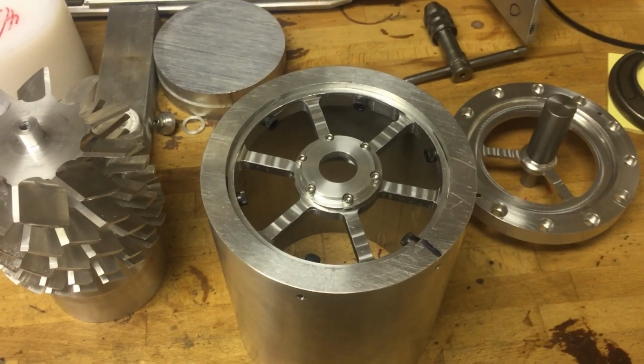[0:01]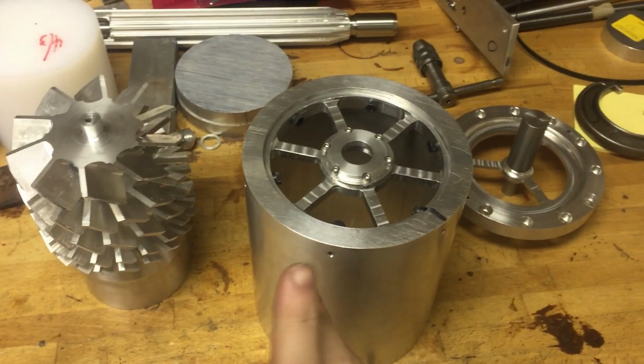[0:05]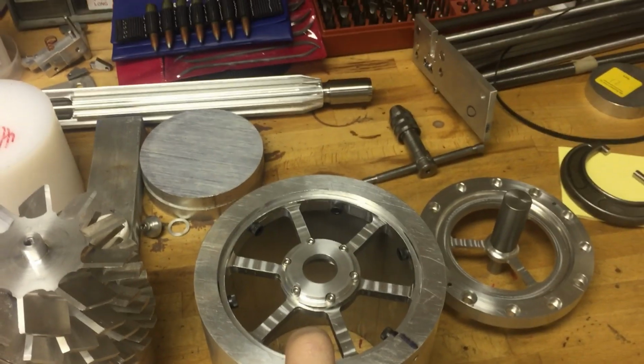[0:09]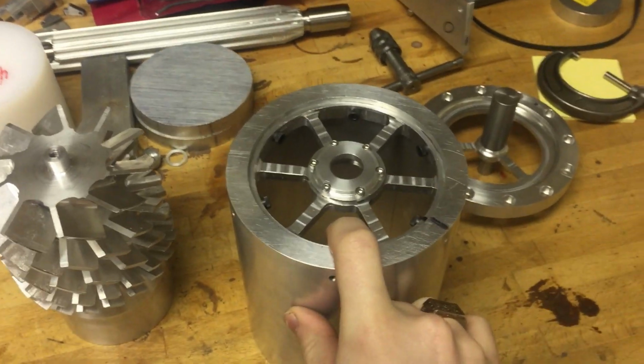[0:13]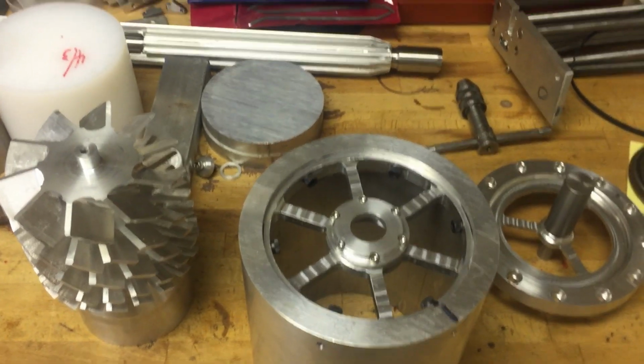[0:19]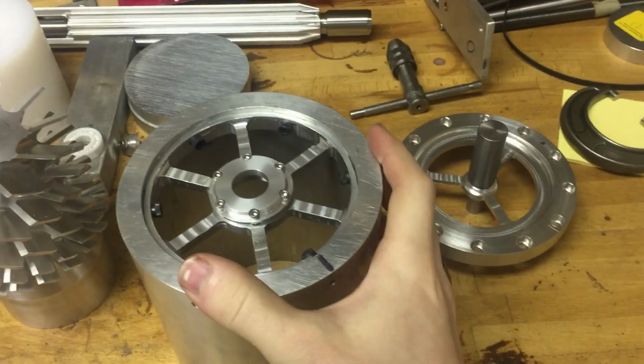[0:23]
All right, I figured I'd say a few words about my latest project. Well, first of all, I am back in my own shop because, like every other school in the country, we evacuated due to coronavirus. So I'm back home now for the rest of the semester and for the summer, which hopefully means I'll be able to get done a lot more projects than I had previously planned for the summer, which is great. And this is what I'm working on right now.
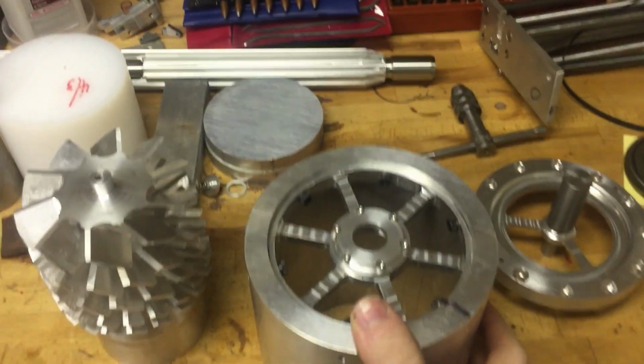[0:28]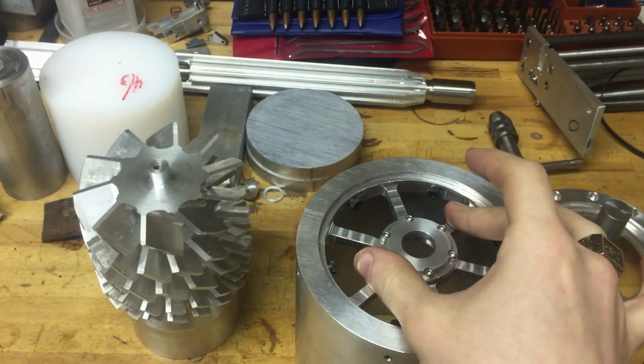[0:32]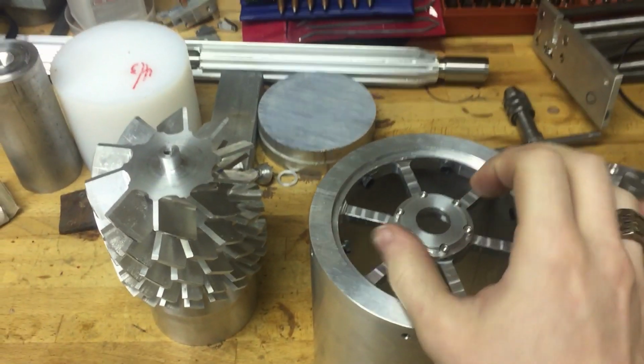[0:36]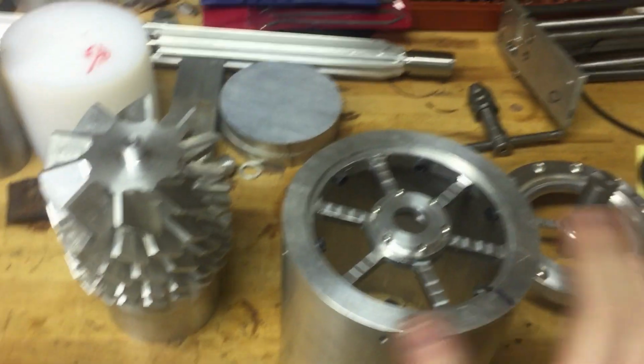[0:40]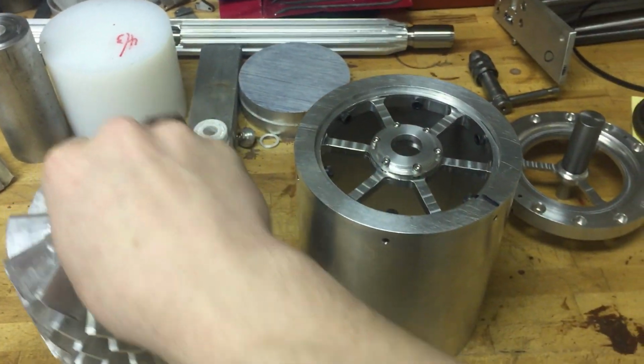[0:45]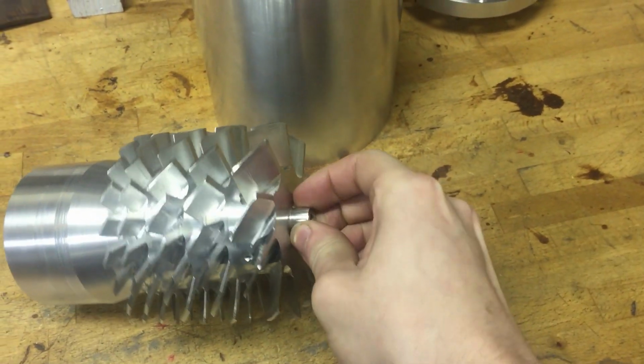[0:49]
It's a turbomolecular vacuum pump. Turbomolecular pumps are a kind of vacuum pump that is designed to obtain extremely deep vacuums, much deeper than you could get with any kind of traditional mechanical pump. I won't go into the physics of exactly how it works because it's not pertinent. But basically, you have this rotor here, which is very pretty. This is machined from solid round stock.
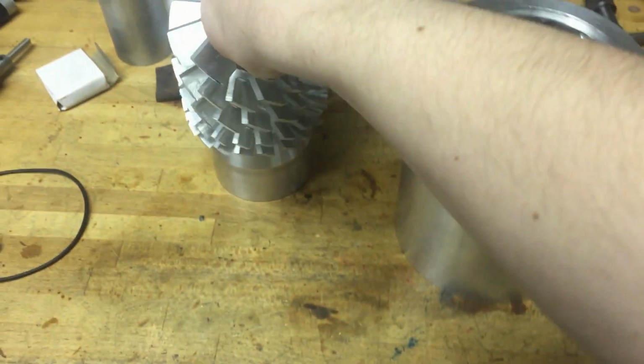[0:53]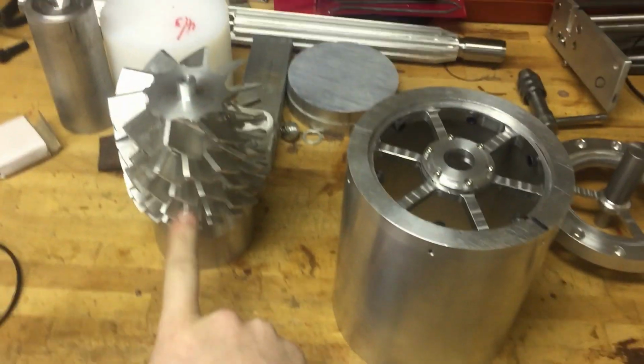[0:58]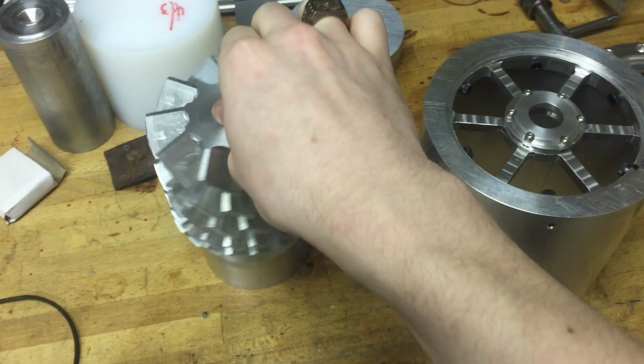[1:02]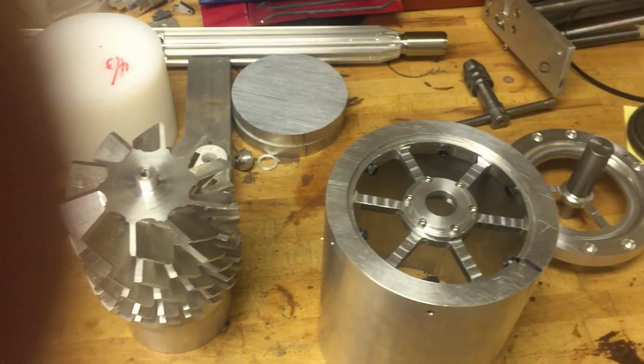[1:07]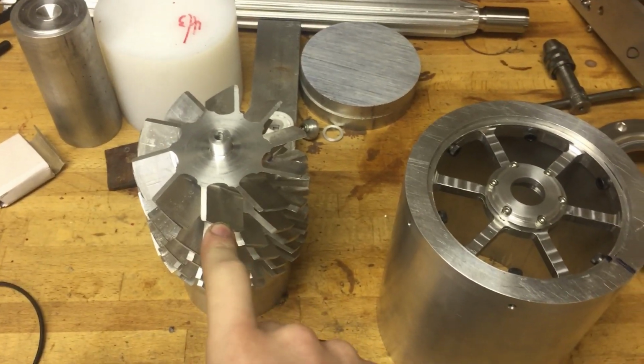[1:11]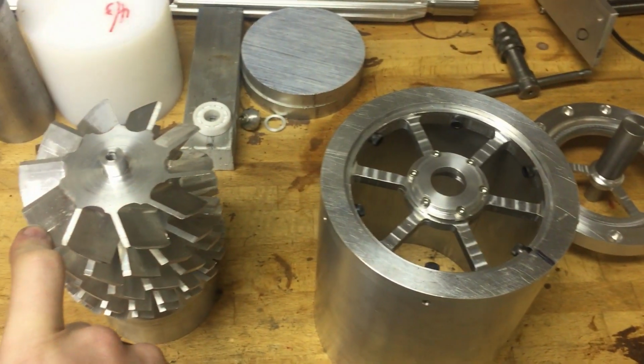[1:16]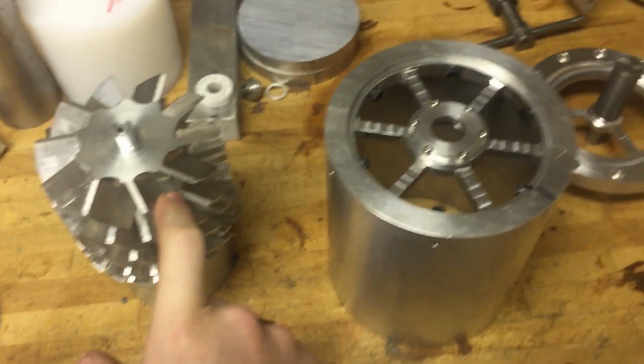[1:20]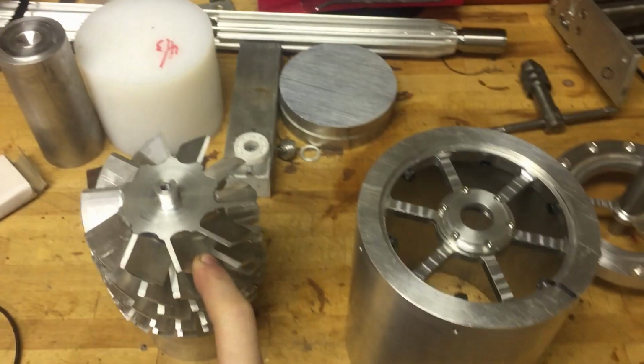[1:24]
This one has 5 stages. A lot of turbomolecular pumps have a lot more, but it's just the limitations of what I could pull off, or what I figured I could pull off. And this rotor will go inside this housing and spin at about 60,000 RPM, which is pretty crazy. That's enough that the tips of the blades will be going just about the speed of sound, which is difficult to pull off. There's a lot of stored energy. When that rotor's at full speed, you're dealing with about 10,000 foot-pounds of energy, which is quite a lot.
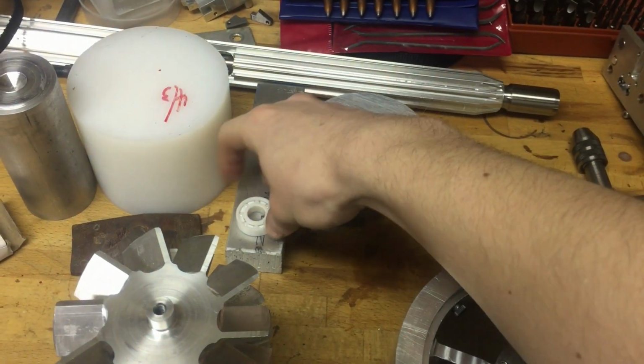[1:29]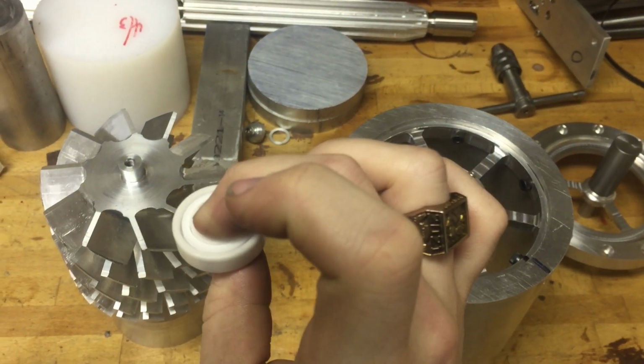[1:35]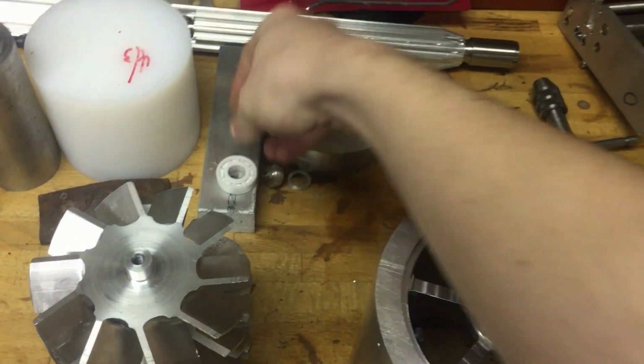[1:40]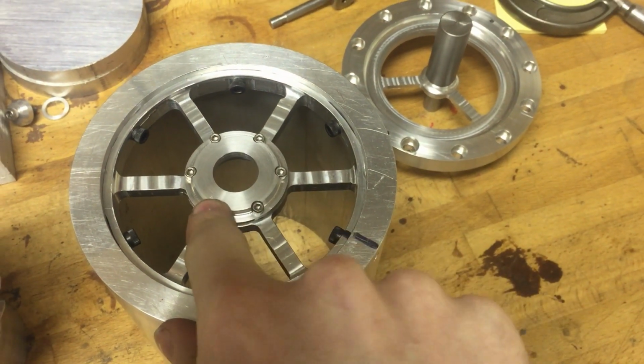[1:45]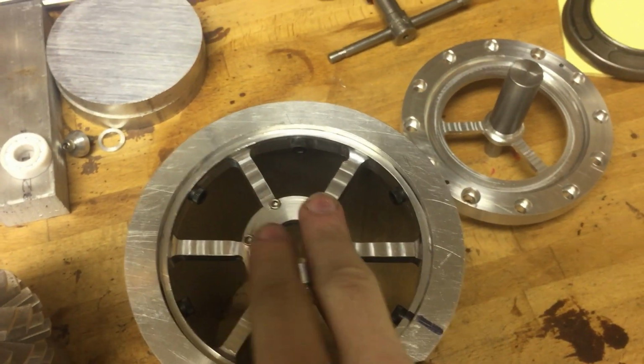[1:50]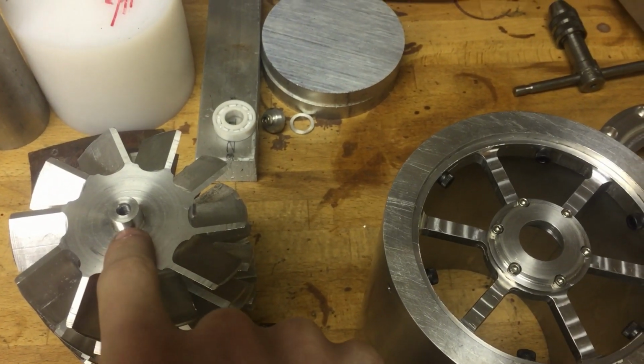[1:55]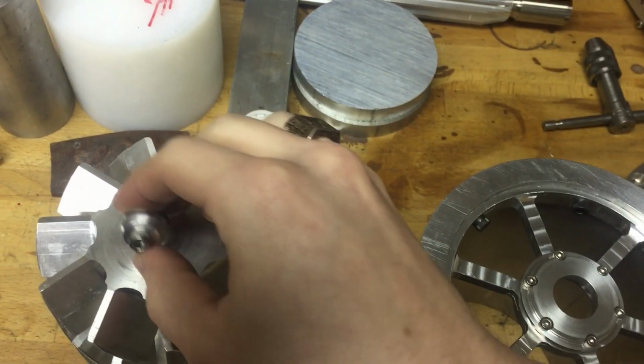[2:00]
It's terrifying, honestly. The whole thing is supported on these little cheap Chinese ceramic bearings, full ceramic bearings from Amazon. These were like $11 each or something like that. One of them will go in here, this plate on top, held in by these 6 machine screws. Pull them out, bearing goes in there, clamps it down. That bearing is held in place by the outer race. And then this little spigot fits through here. The bearing fits on that, and then this little guy threads on the end.
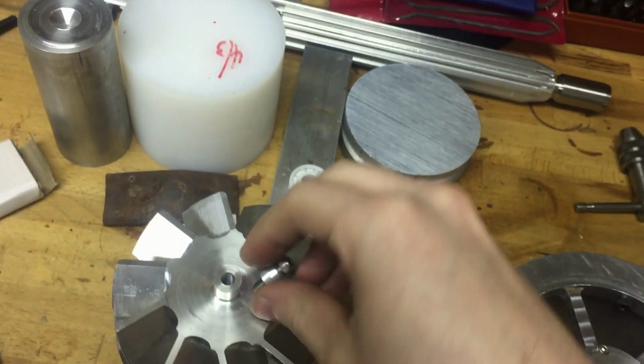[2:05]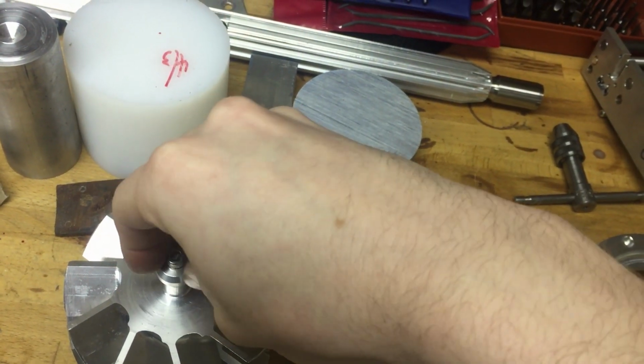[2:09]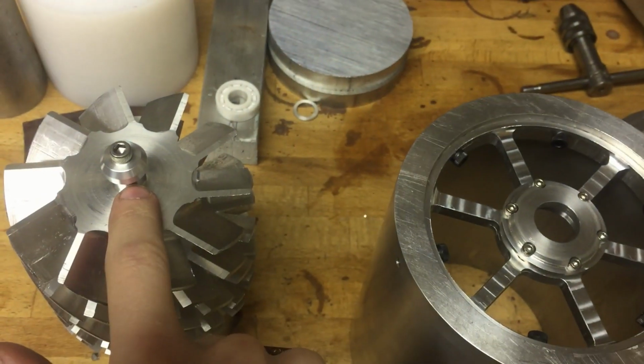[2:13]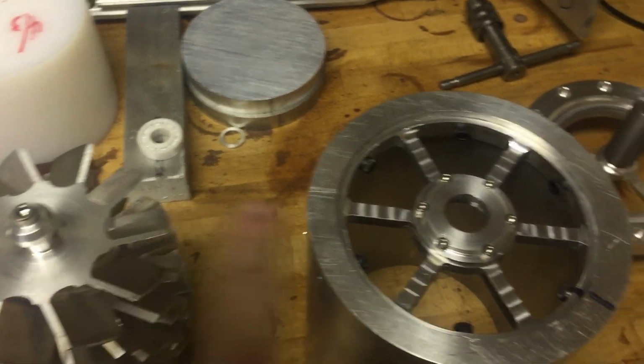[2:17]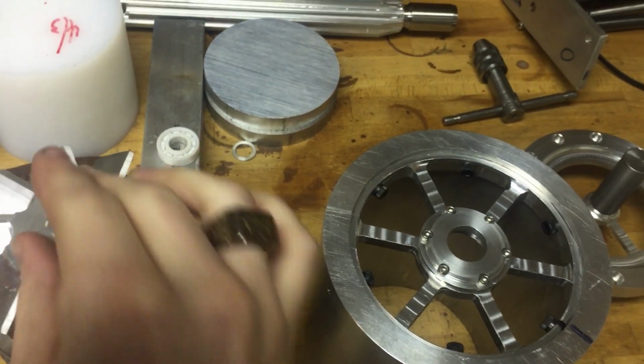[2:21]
Come on. Come on now. There we go. It goes on the end, and that'll clamp the bearing by the inner race. So this bearing on this side will be clamped on the inner race and clamped on the outer race and held fixed, and that basically sets the location of the whole rotor.
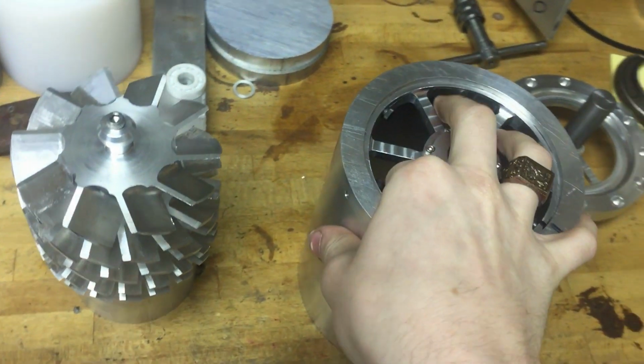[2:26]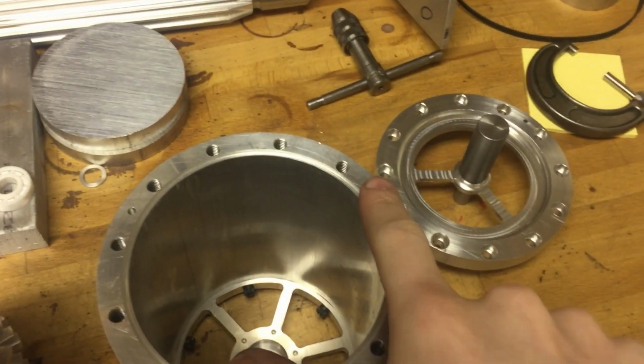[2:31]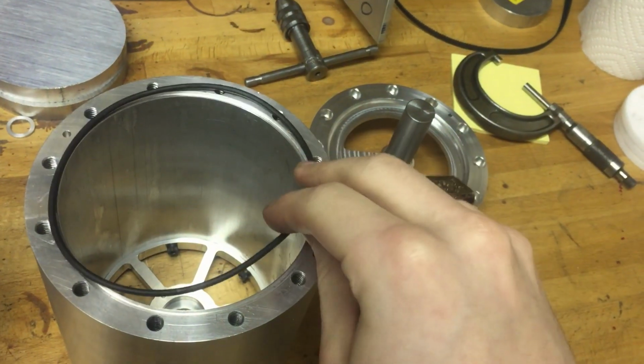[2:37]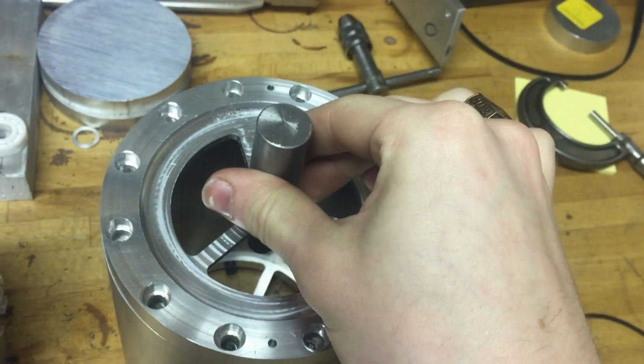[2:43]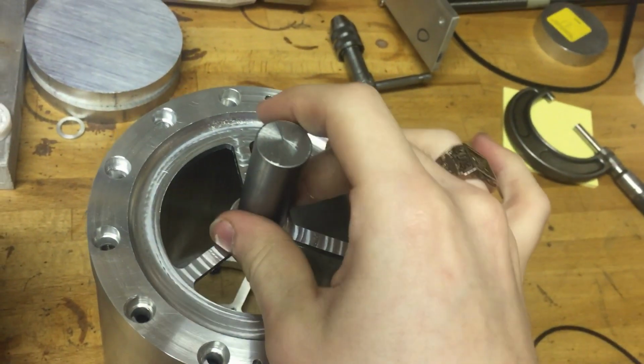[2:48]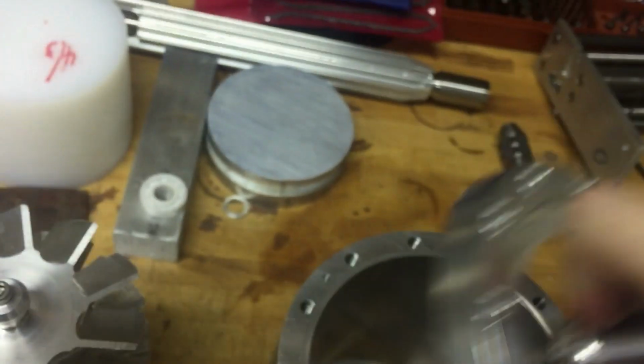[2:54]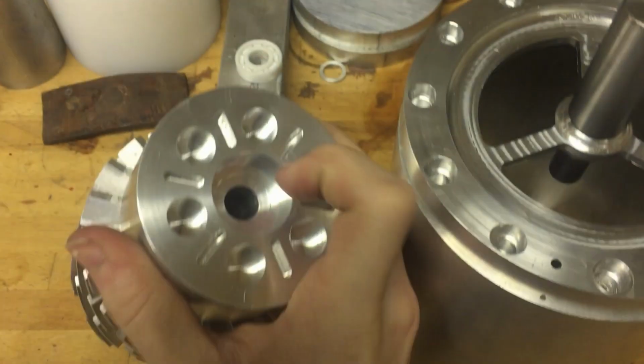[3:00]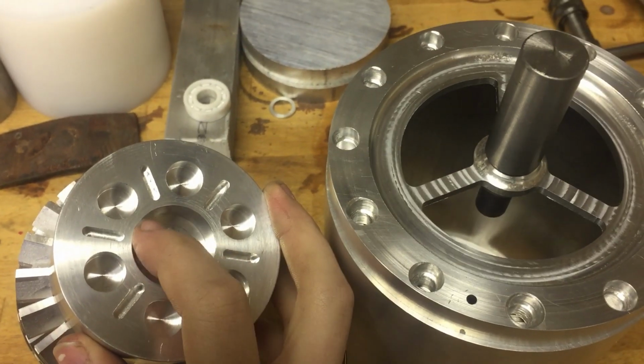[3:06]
On the other side, let's move this around. On this side, we have a bolt hole pattern and a little O-ring groove where I made an O-ring of the appropriate length that'll fit in there. And this goes on this side. You can see there's dowel pins to align it, so it only goes on one way to maintain concentricity. And another ceramic bearing, same one, will fit on this shaft, and that fits in the central bore in the back of the rotor here. And that's just a slightly loose fit.
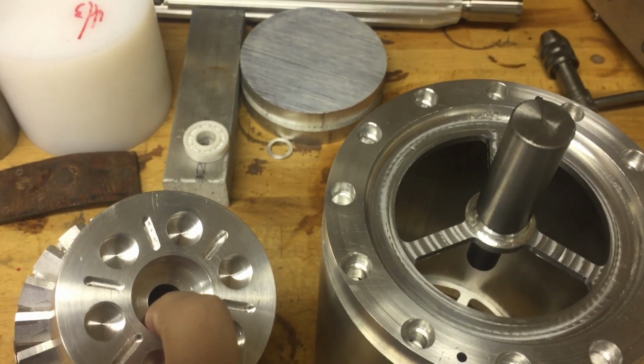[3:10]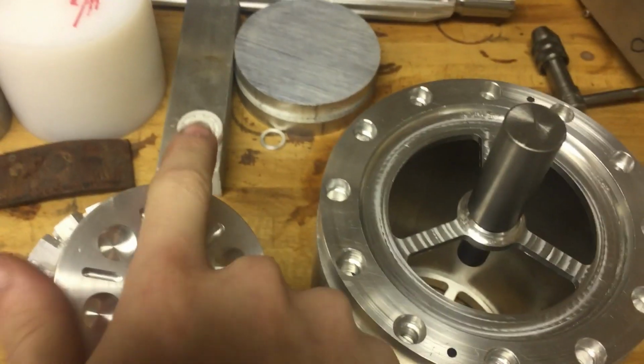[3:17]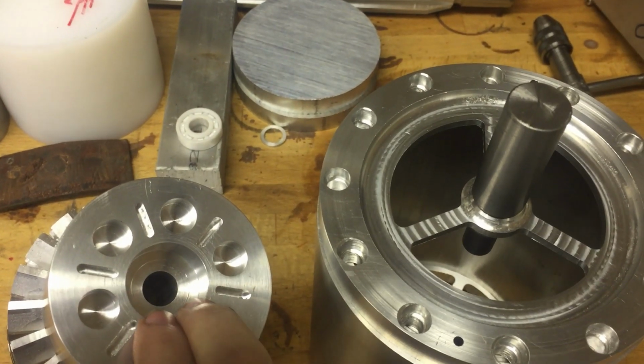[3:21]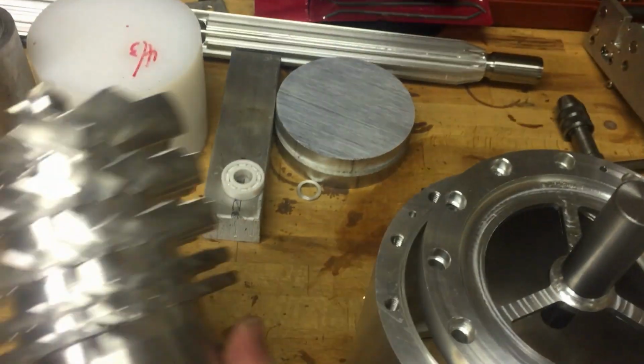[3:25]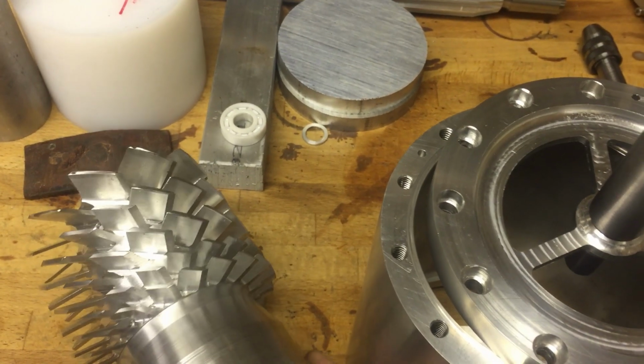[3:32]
Let me say this, lightly snug fit. It's just enough that if the rotor were to expand or something, this bearing can float and can move axially while the other bearing stays fixed. You don't want the bearings on both sides to be completely rigid, because then this rotor, which is at extremely high speeds, might heat up due to the drag. Now, it'll be spinning in a vacuum, but if a little bit of air leaked in there, that's a lot of air resistance, and the rotor could get very, very hot.
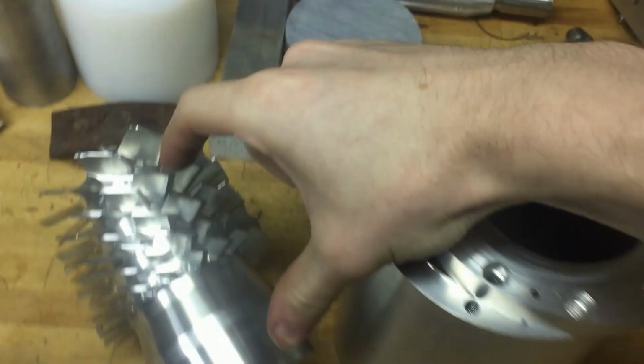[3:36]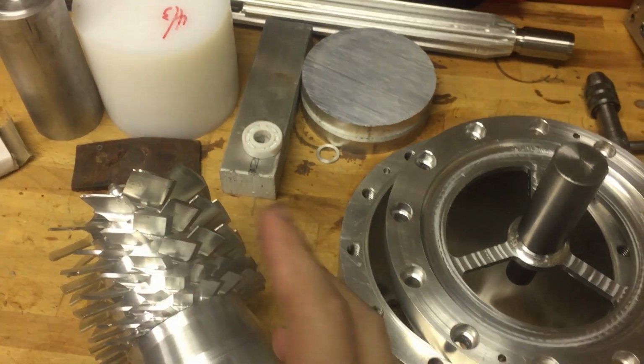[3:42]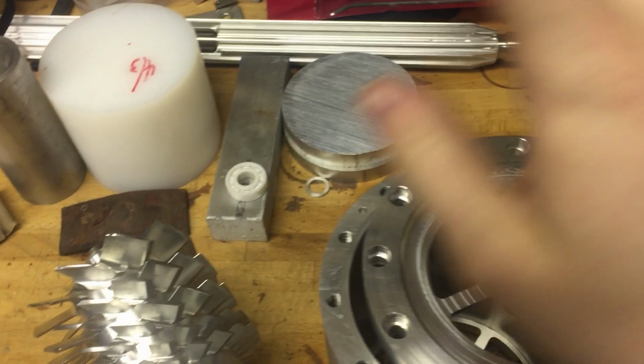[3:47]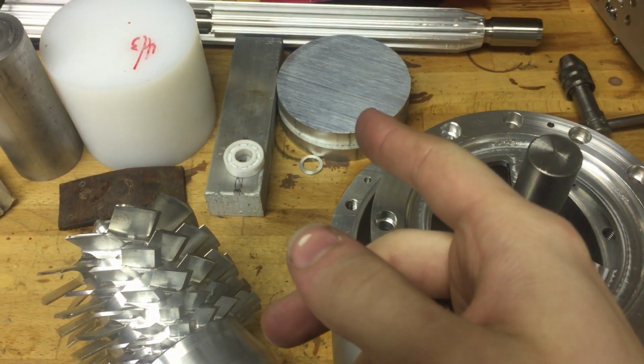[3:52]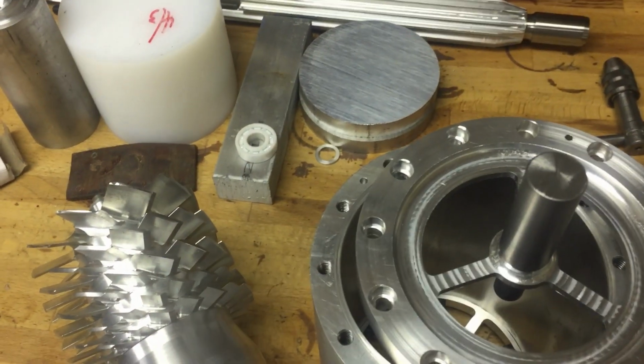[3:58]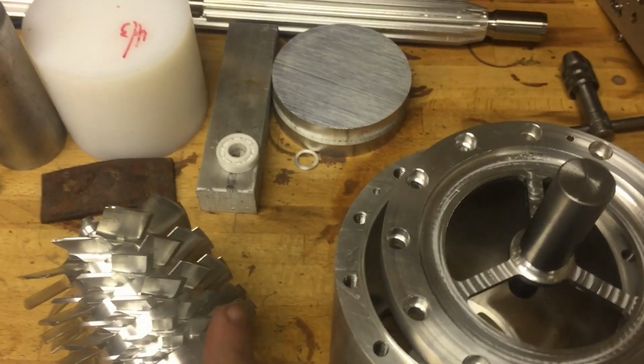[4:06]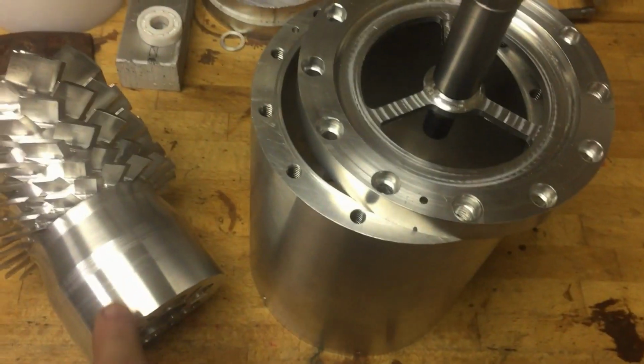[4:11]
And if it expands axially, it could push outwards on the bearings. And if they're held rigidly, that's going to put a lot of force on the bearings, and you could destroy them. On a steel bearing, it's not a huge deal. On a ceramic bearing, when they fail, that might mean they explode. And if the ceramic bearing explodes, including the inner and outer race, not just the balls, because it's full ceramic, well, this is at extremely high speeds, that could be very, very dangerous. So we want to do everything we can to minimize the forces on that bearing and make sure it does not fail. That didn't stop me from buying $11 Amazon bearings, though. But that's why one side is floating, the other side is rigidly mounted.
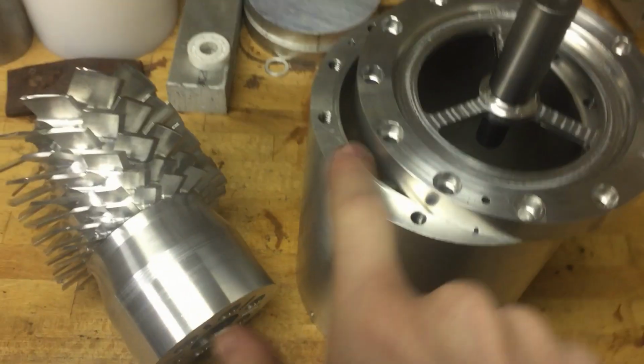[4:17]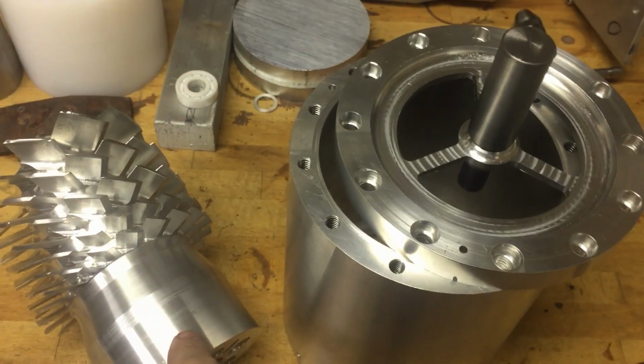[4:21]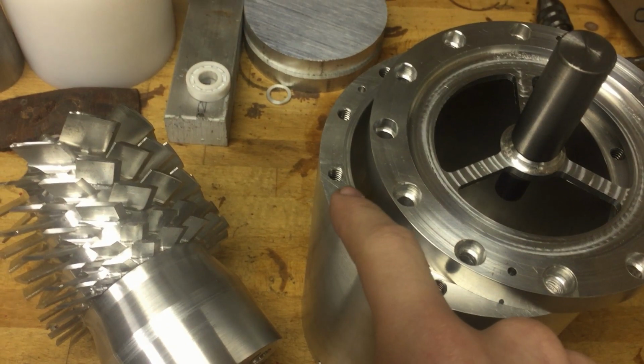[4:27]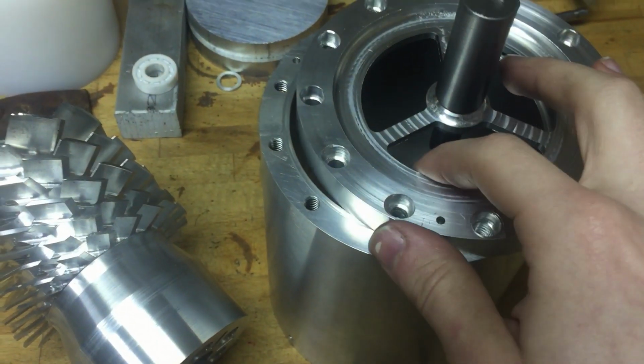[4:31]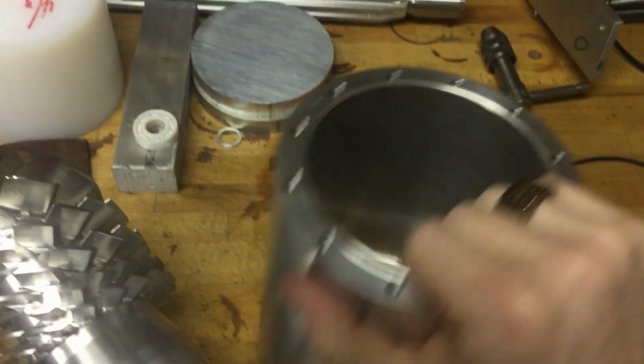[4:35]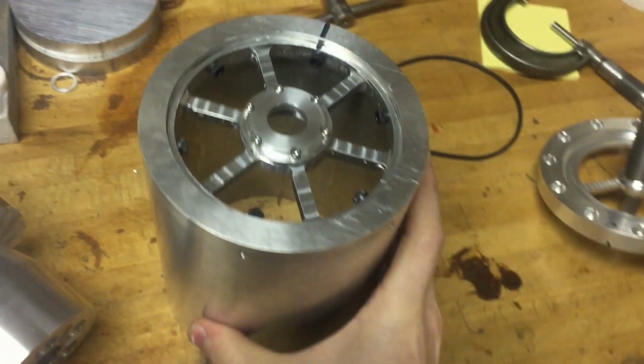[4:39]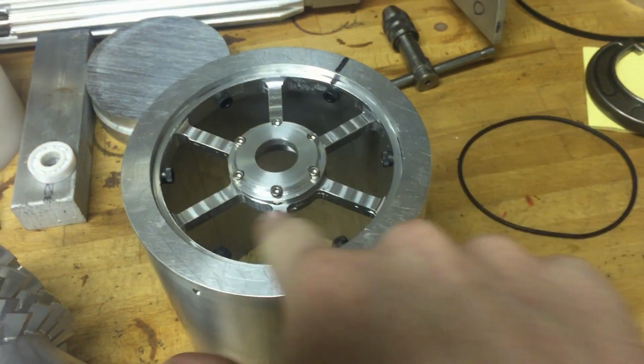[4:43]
This side is the low vacuum side, which is to say it's normal vacuum, not extremely high vacuum. So just a normal O-ring is okay to seal it on this side. That's not a problem. On the other side, though, that's the high vacuum side. You can't just go ahead and slap any old O-ring on there and expect it to work, which is why this spoke assembly that holds the bearing is on the inside.
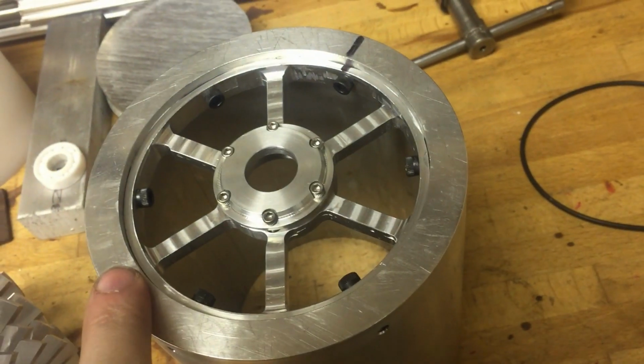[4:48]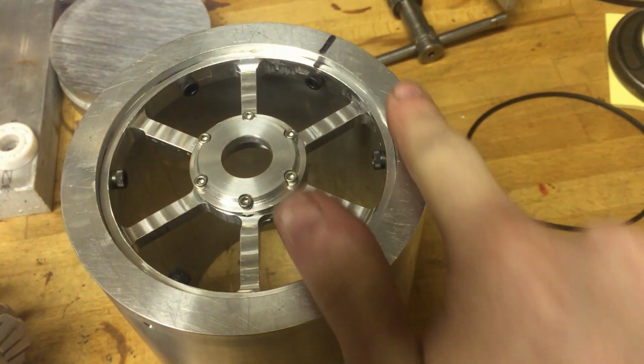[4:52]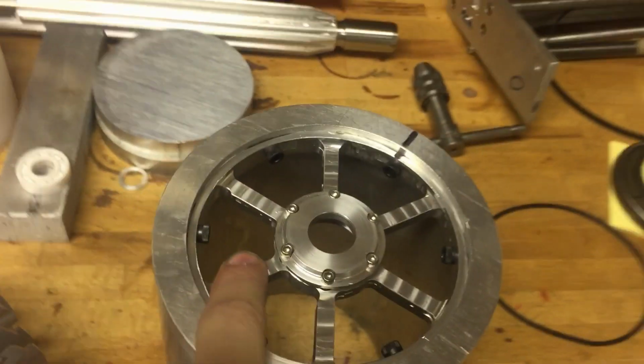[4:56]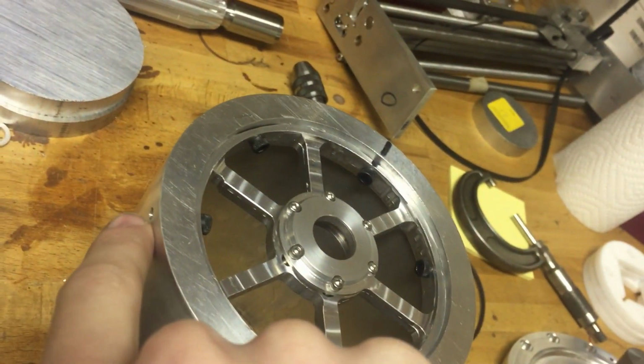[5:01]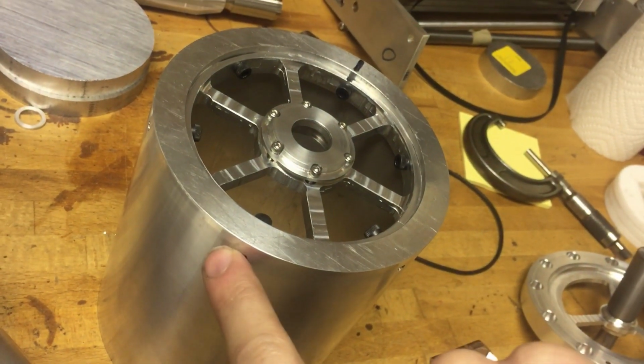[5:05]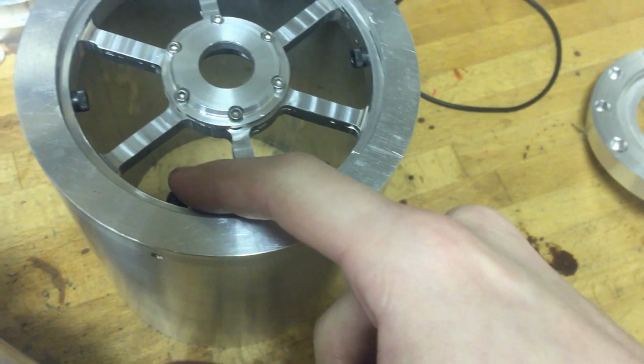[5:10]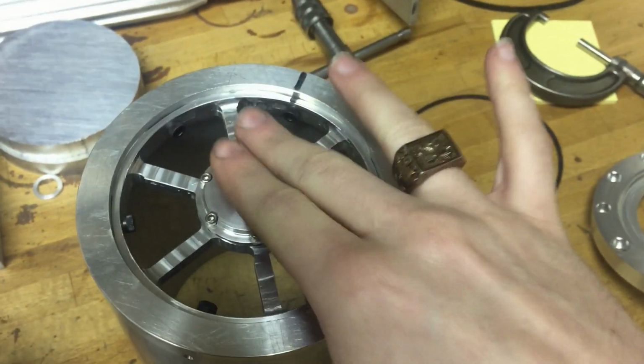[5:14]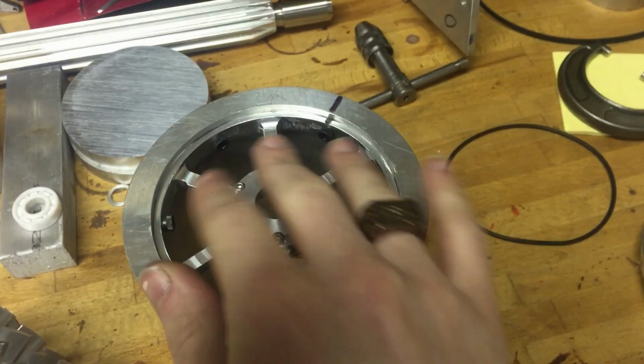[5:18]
It doesn't bolt onto the face because that would create a seal, or a plane that would have to be sealed. They're putting on the inside, well, it doesn't matter, the whole thing's just in the vacuum. Now, I know what you're thinking, I've got the holes for these little radial screws. Basically, I'm going to TIG weld over each one of these little holes from the outside. Which is fine, because the screw goes in the inside, as long as I'm careful enough to not ruin too much of the thread, that should be okay. And I can seal that up, and now this whole thing in here is inside of the deep vacuum section, and I don't have to worry about any seals.
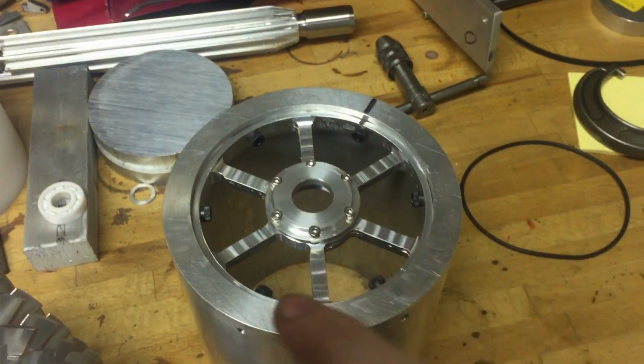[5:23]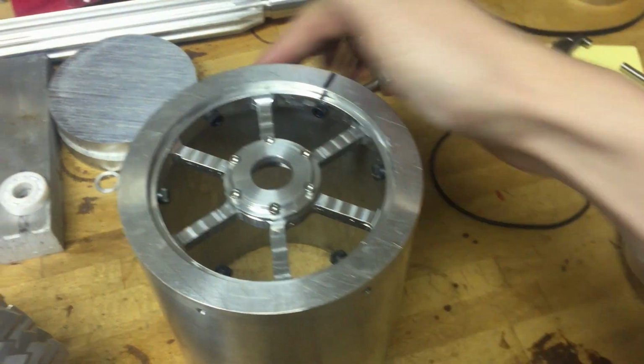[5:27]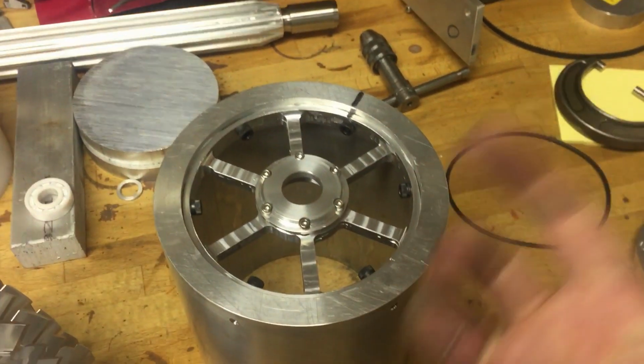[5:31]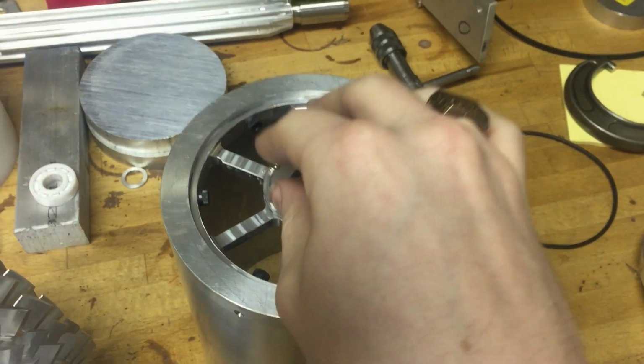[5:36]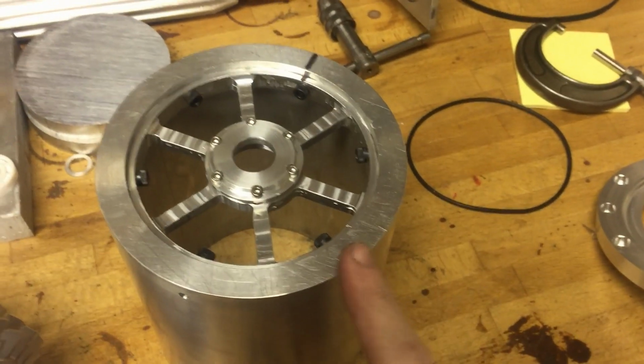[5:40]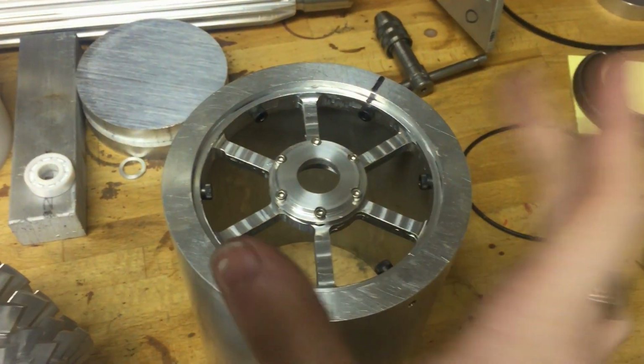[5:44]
I mean, at some point, the pump will have to be attached to a chamber, which will probably be done by adding a flange that's wider around the outside and having bolt holes around this way. But for now, I'm not concerned with that. I just wanted to design this so that it would not interfere with whatever I ultimately choose to do to mount this to the vacuum chamber. Because bear in mind, normal O-rings, not good enough for high vacuum.
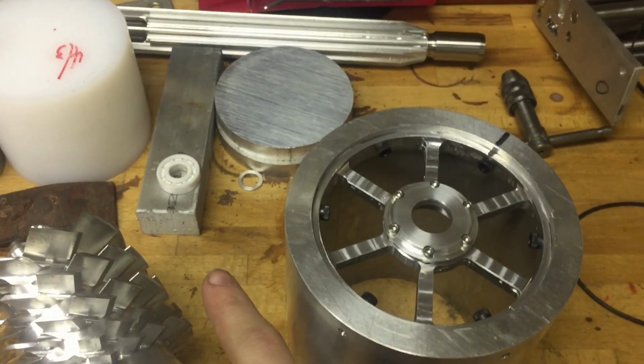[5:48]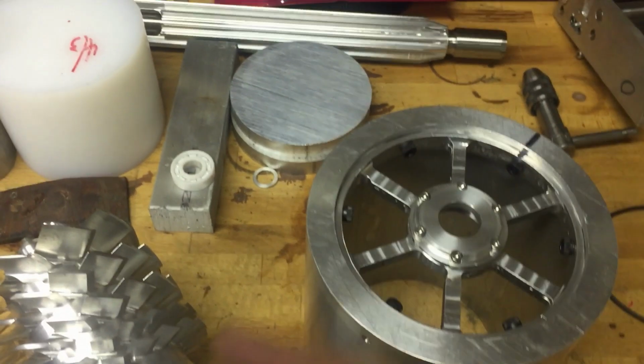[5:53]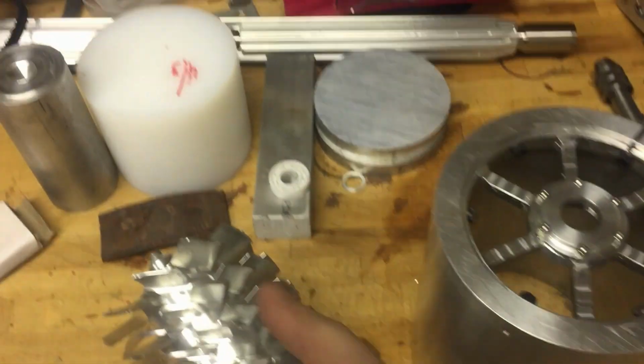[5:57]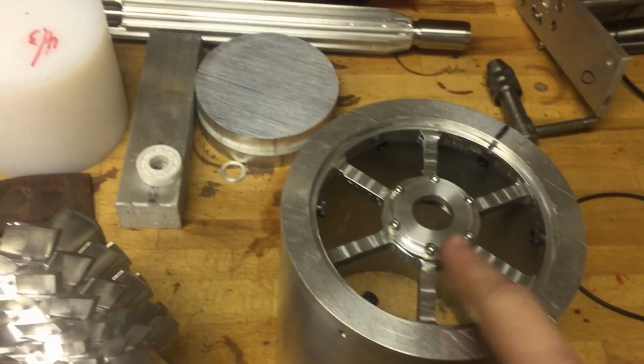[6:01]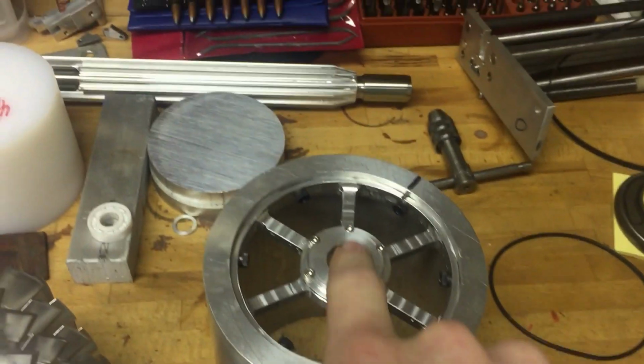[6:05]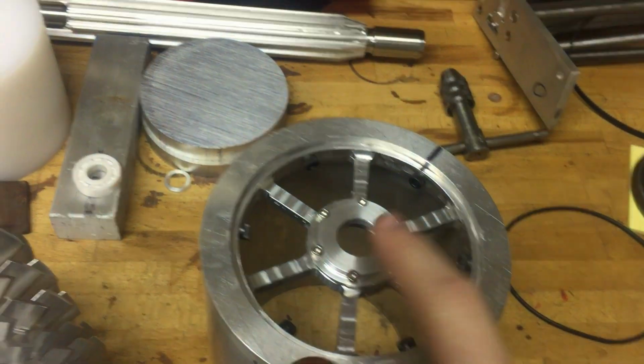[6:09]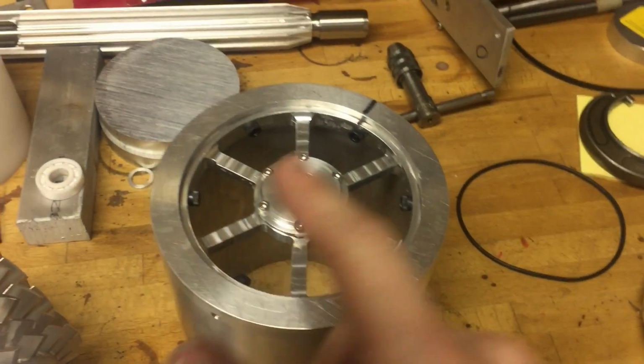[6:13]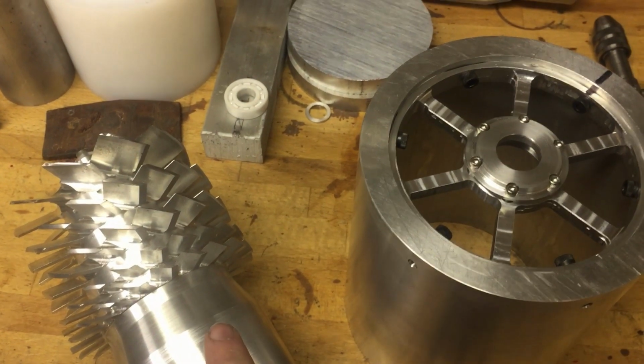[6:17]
It's also why I'm using ceramic bearings. Well, there's a couple reasons. Number one, extremely high speeds. You kind of need ceramic bearings, can't use a steel bearing. But the reason it's full ceramic as opposed to something like a hybrid bearing is because you can't use any oil in a high speed, high vacuum application. Because the oil will vaporize, it'll off-gas, and it'll spoil your vacuum. So you can't use any oil, you have to run the bearings completely dry at 60,000 RPM. Spinning a rotor that weighs almost 3 pounds.
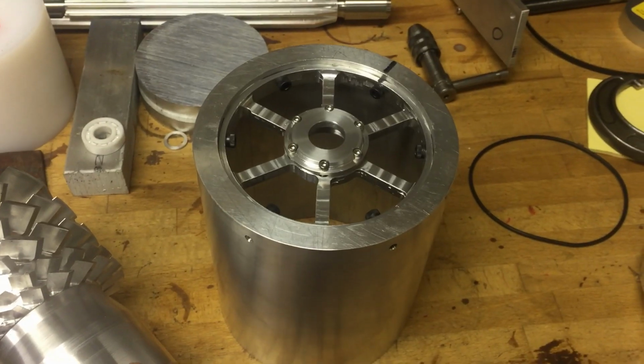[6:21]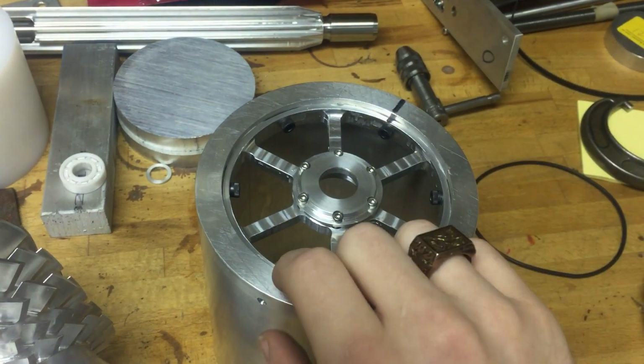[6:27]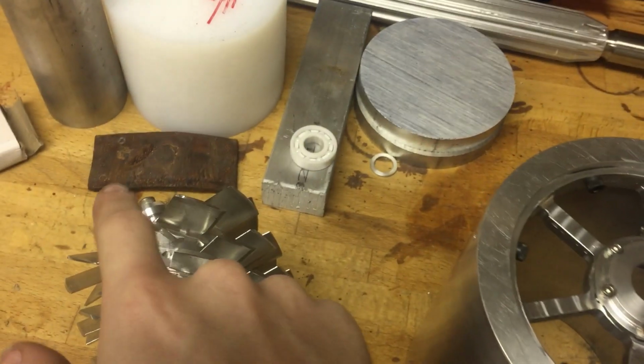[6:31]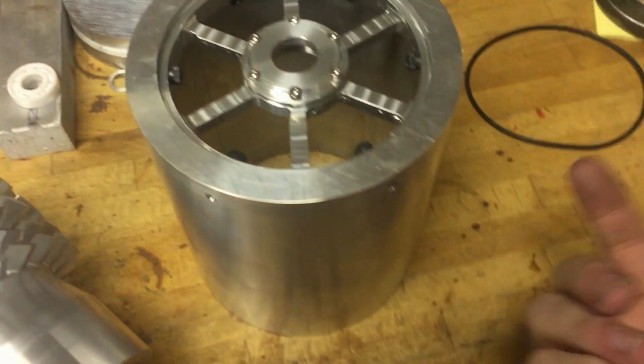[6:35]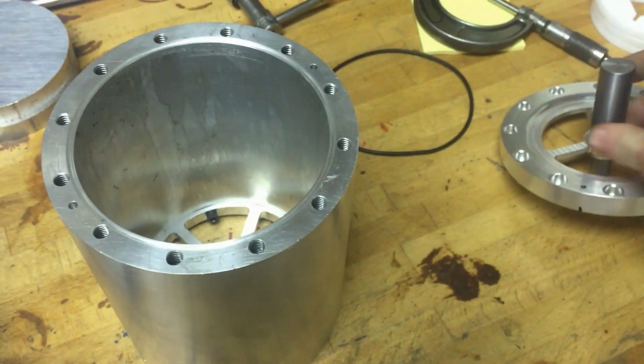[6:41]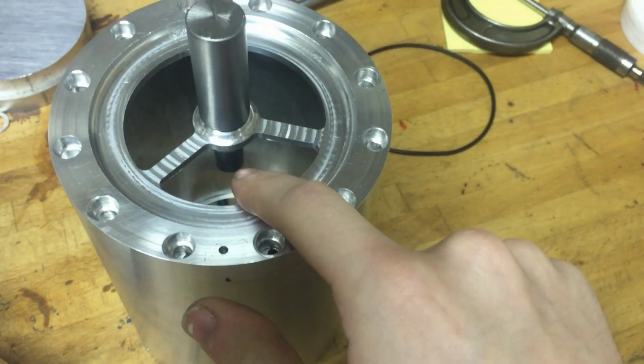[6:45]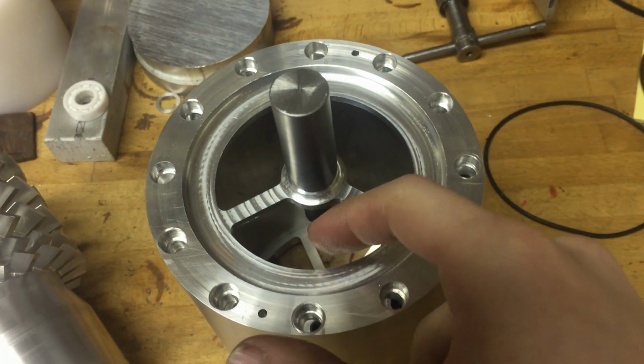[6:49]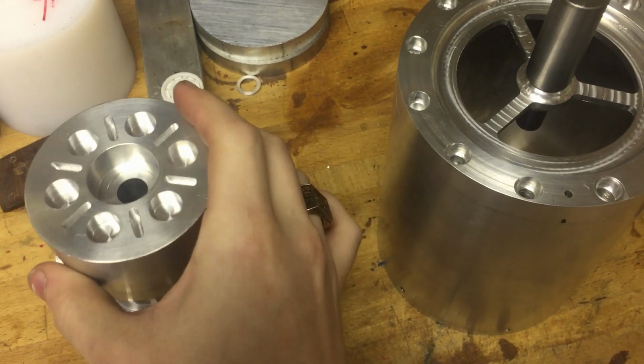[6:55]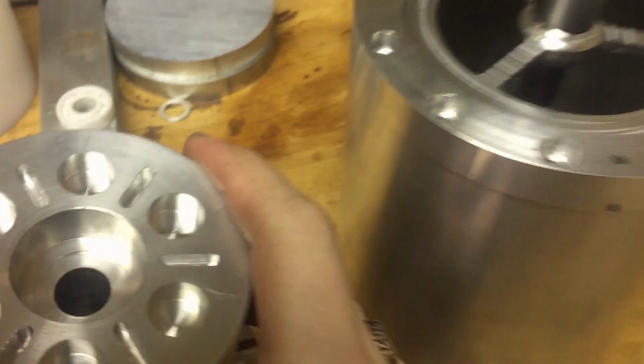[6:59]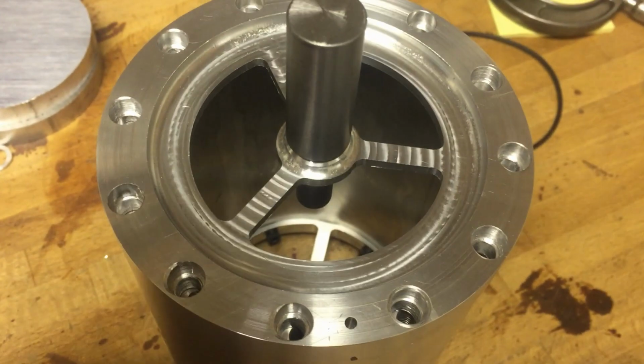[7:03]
Pretty crazy. The next thing I'm working on, so this is the inlet side where the air or whatever would be going in, pushed through the vanes. It'll come out through a port in the side that I haven't machined yet. So then, if it's coming out through the side, that begs the question of why is this side on the back open? Because it's got to be sealed up, or at the very least, connected to vacuum. Neither one of those is the case. Well, this is sitting in here. While this is sitting in there, this face completely fills up those little open sectors.
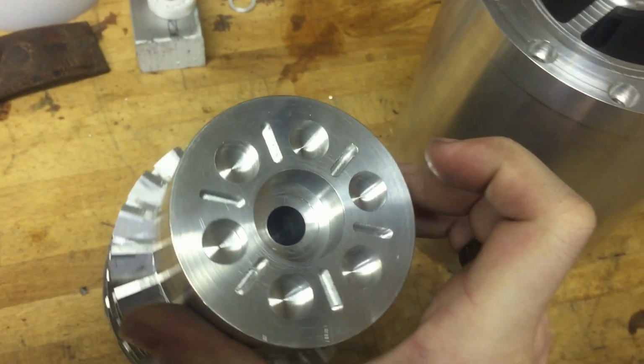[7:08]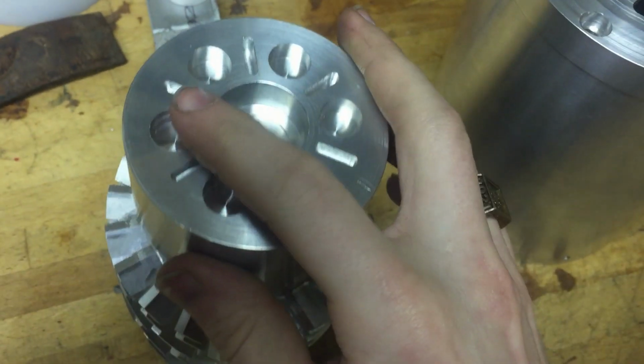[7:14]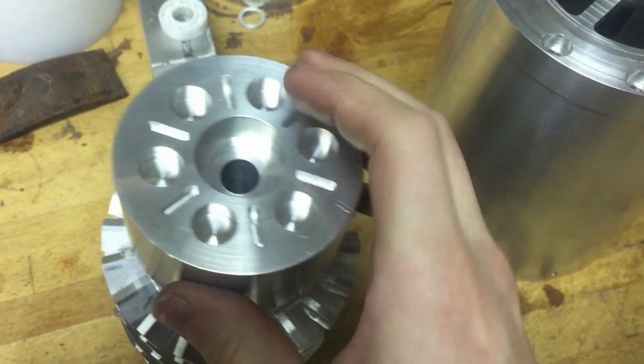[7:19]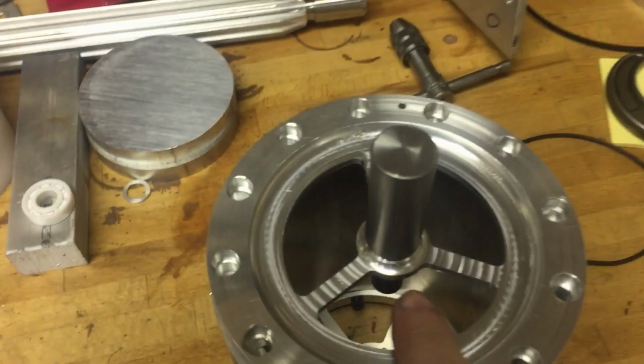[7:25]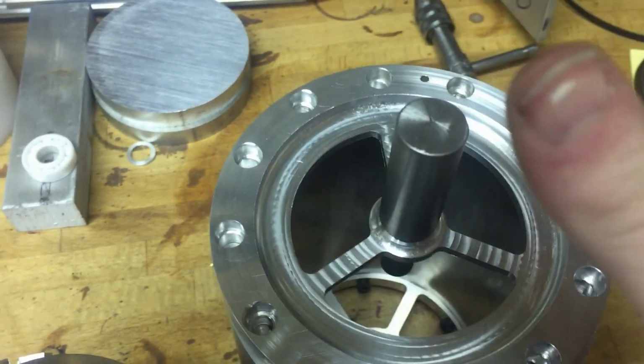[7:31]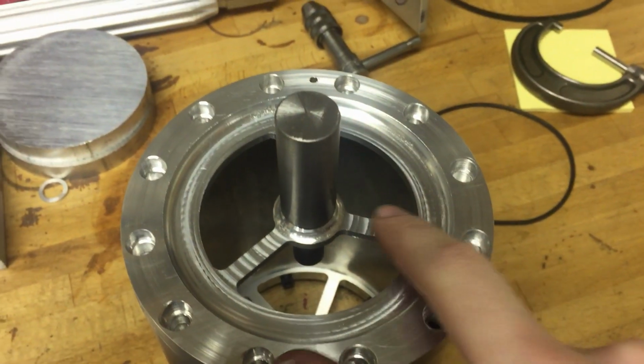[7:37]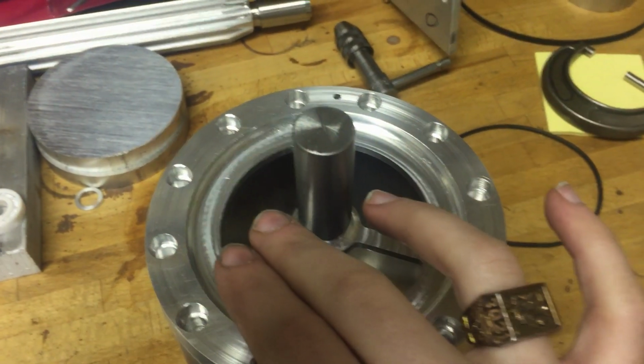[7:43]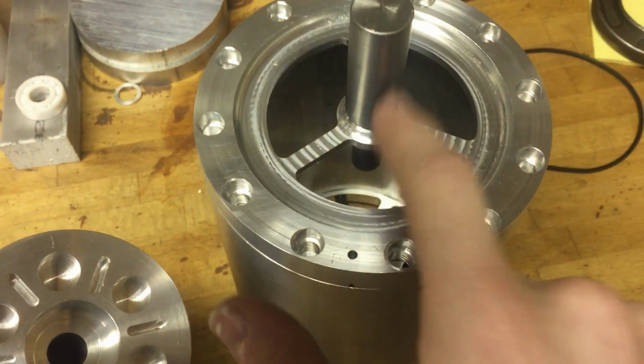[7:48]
And there's a strange pattern in the back of this for a reason. The round holes will hold magnets, neodymium magnets, half inch by a quarter, of alternating polarity. And those magnets, then I could put a plastic over here, cut a sheet of plastic basically that fills up this space and is probably epoxied down. Again, this is the low vacuum side, so I can use things like adhesives without completely ruining my vacuum. Seal it down. So the plastic will provide the vacuum tight seal. But the magnetic flux will go through the plastic.
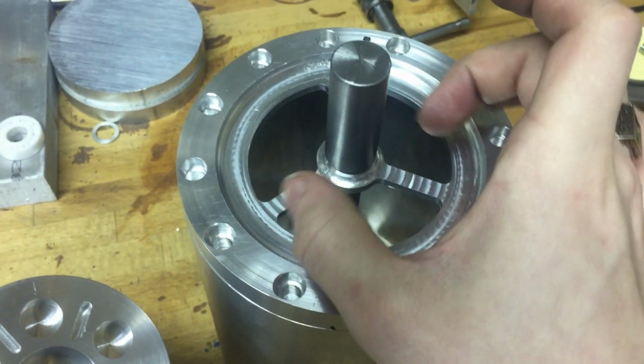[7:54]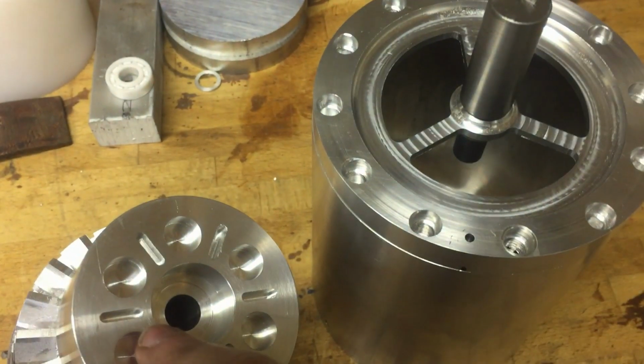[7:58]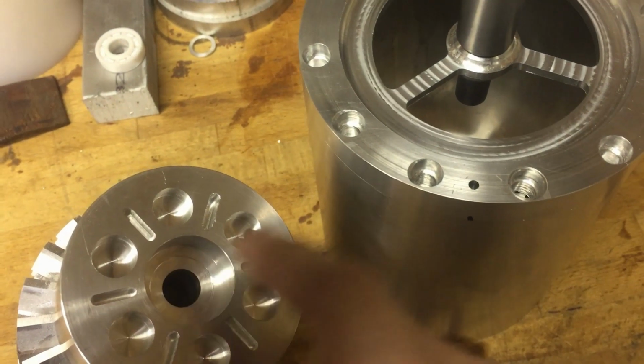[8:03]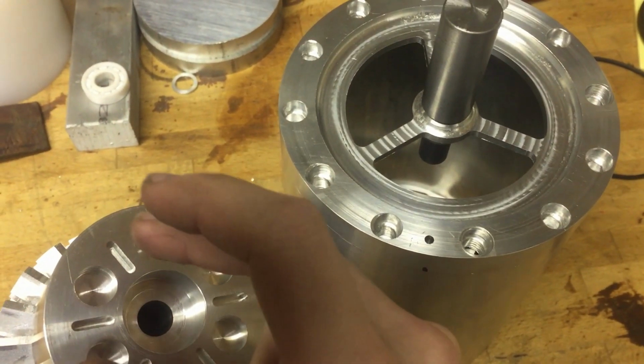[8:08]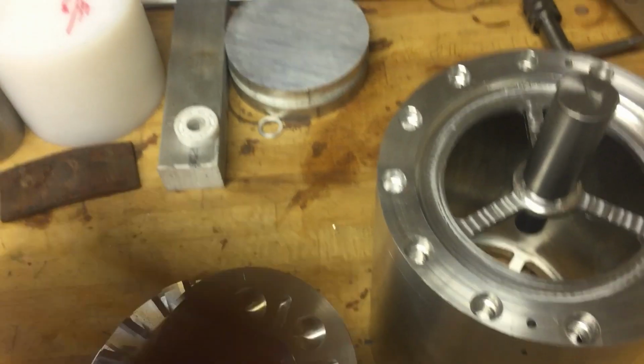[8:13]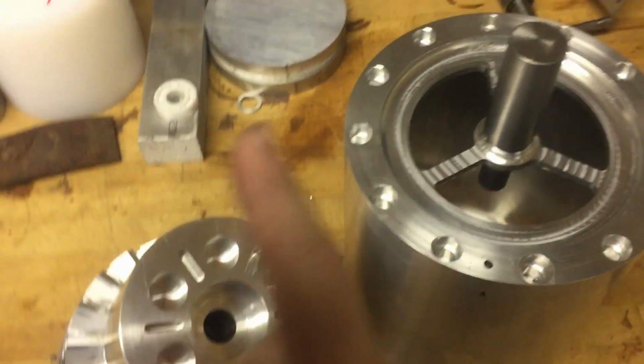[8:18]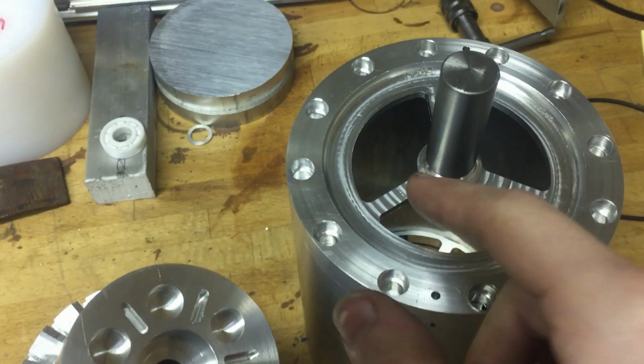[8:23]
And then I could have another magnetic assembly on the outside, a coupling. And yeah, now I've created a magnetic coupling from the outside to the inside, so I can drive the rotor from the outside. That's important because it's a little tricky to build a motor and put the whole motor in a vacuum, because it'll probably overheat because it won't have any air to cool it down. And it won't be able to convect heat away or conduct heat away, so it'll rapidly overheat. So you want the motor probably on the outside to prevent it from overheating so that it can be cooled. Either that or have a liquid cooled motor, which I don't want to deal with.
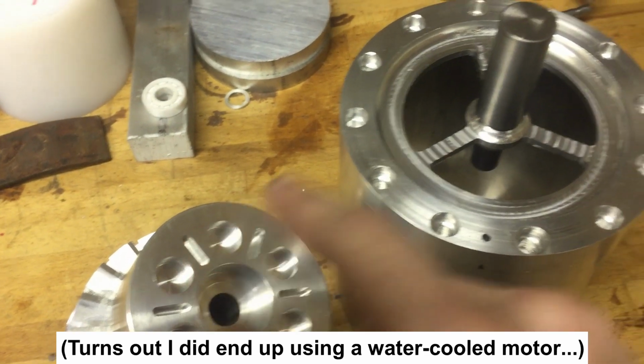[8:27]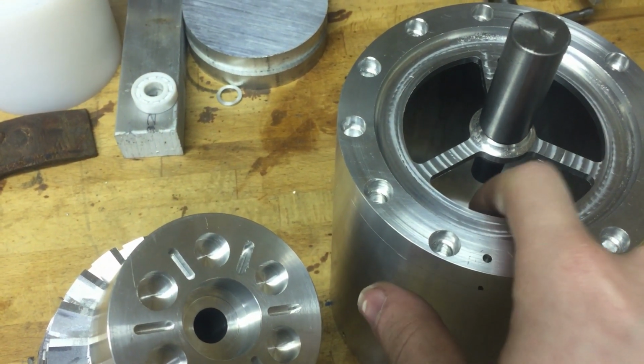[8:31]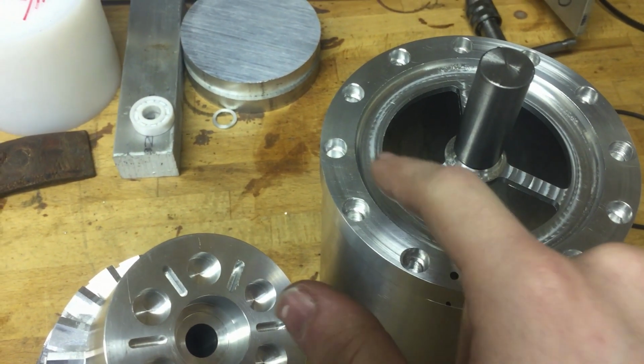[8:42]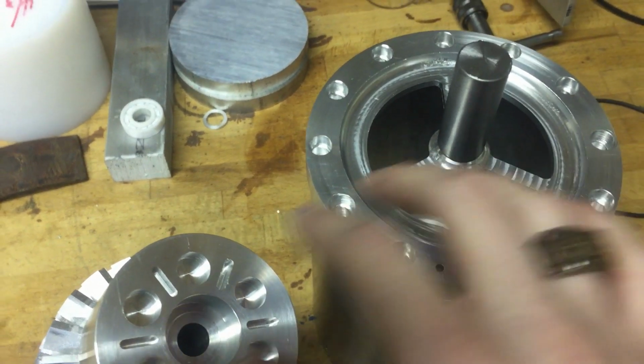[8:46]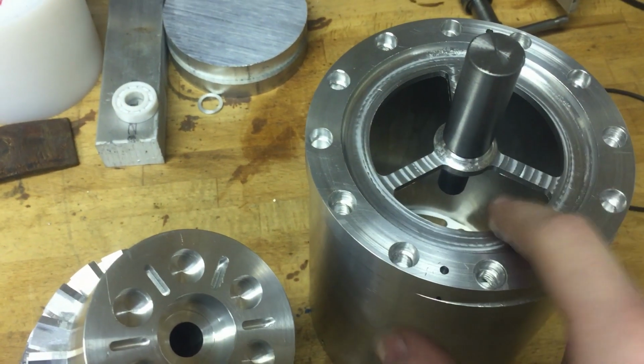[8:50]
So you want a magnetic coupling so that you can drive it, it's in the vacuum, and you can drive it from outside in the atmosphere. Perfect. But you have magnets next to what would have been just a solid sheet of aluminum. That's pretty much the definition of an eddy current brake. So the eddy current losses induced by the magnets in that sheet would be absolutely insane.
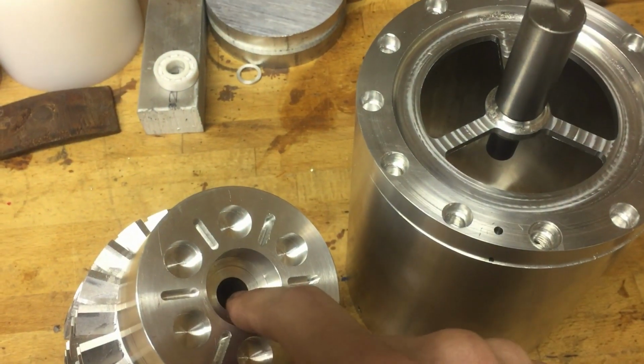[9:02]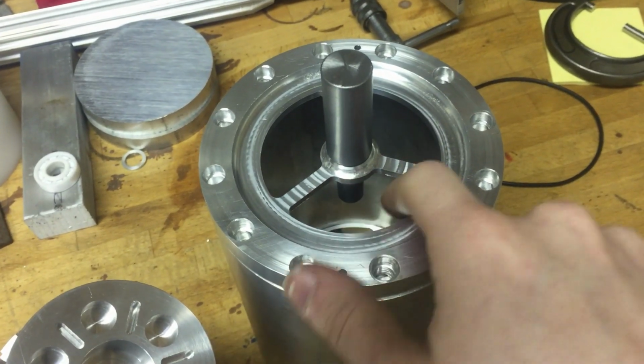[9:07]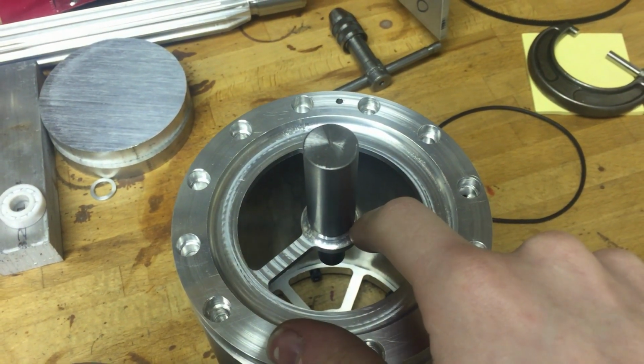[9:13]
Probably in the order of kilowatts of power being dumped into this little piece of aluminum, which would probably end up just melting pretty quickly. And not to mention, it would take an insane amount of power just to keep the rotor spinning. So you mill out these areas, creating three loops. And these are the loops that the eddy currents will be induced in.
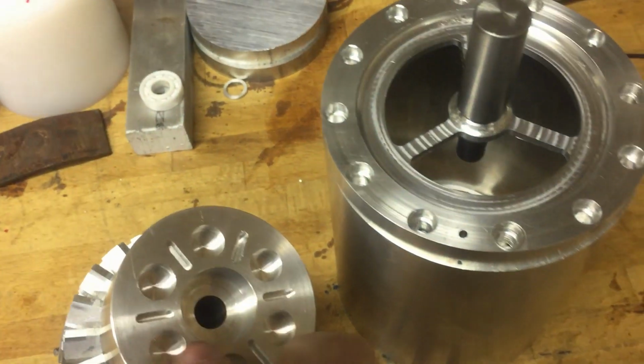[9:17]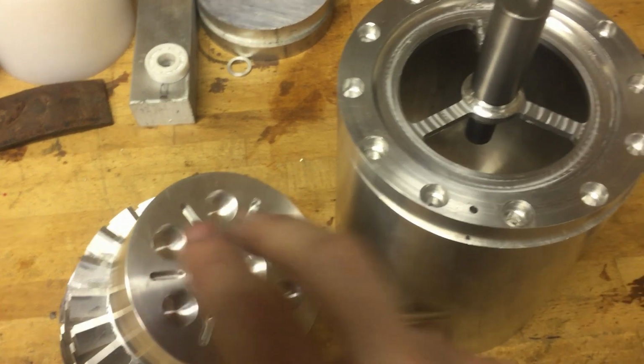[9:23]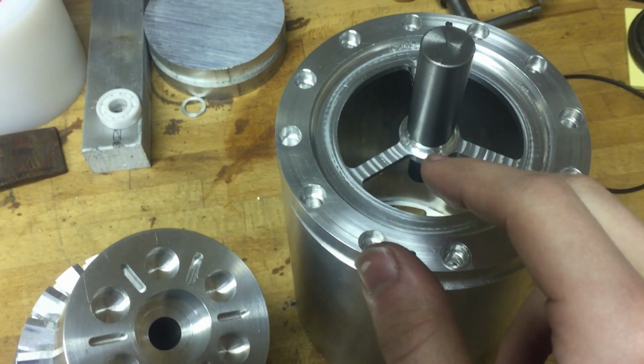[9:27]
But because there are three loops symmetrically, and there are six magnets symmetrically, alternating polarity, that means that at any given point in time, there's pretty much going to be two magnets in each of these sectors. Those two magnets have opposite polarity, which means, if you're familiar with Ampere's law, the total magnetic flux through this loop, through all the other loops, will be pretty much constant as the rotor rotates.
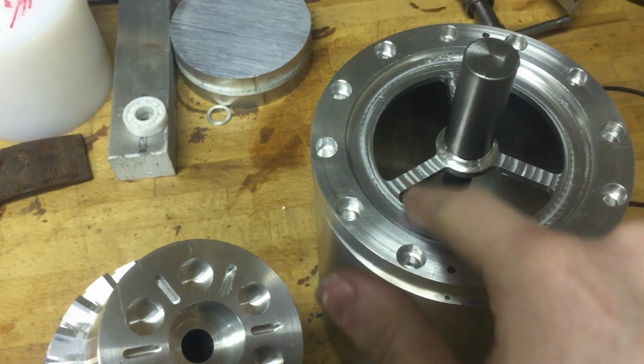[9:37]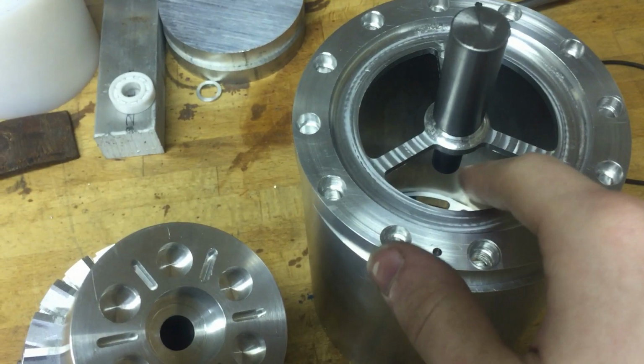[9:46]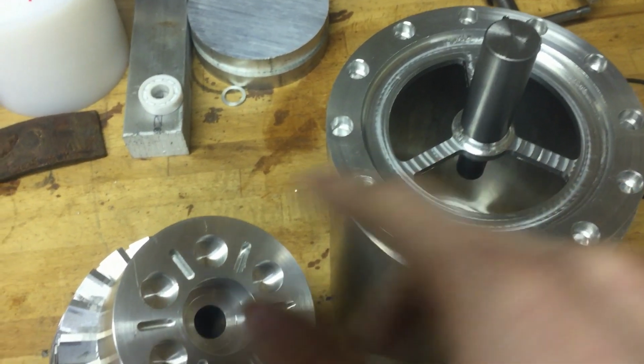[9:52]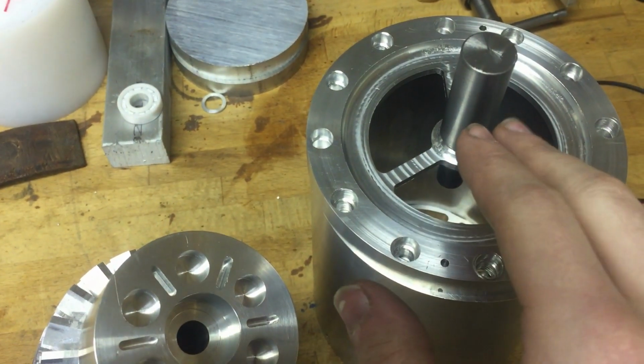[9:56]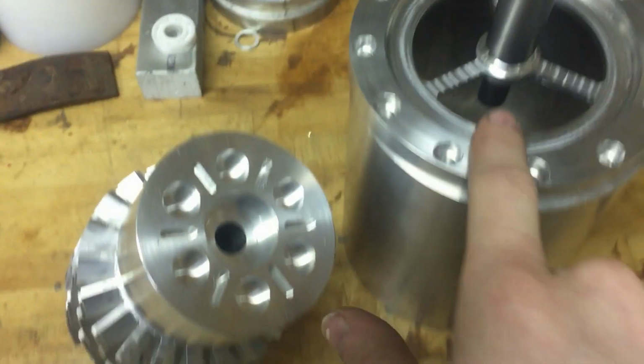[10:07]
So this particular pattern, there's a reason there's three here. If I did four openings or five or six or anything like that, it would still have eddy current losses. It might be a little bit better, but not by much. This, particularly having three, should make it so that the total flux through each loop is pretty much constant and balanced, and as a result, the eddy current losses should be pretty minimal. You're just dealing with the weird transitional period where one magnet leaves and the other magnet enters, and that, I'm hoping, is not going to be too bad.
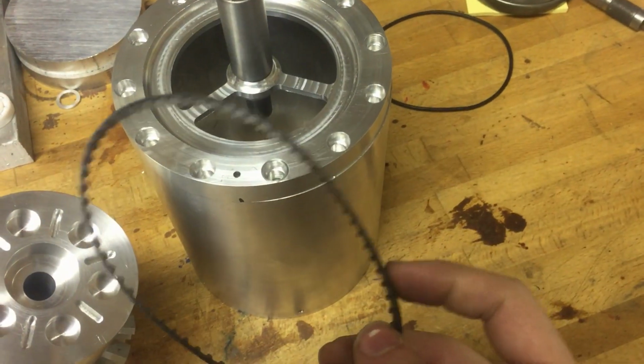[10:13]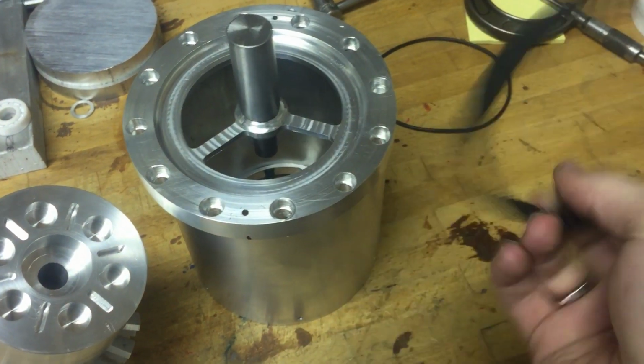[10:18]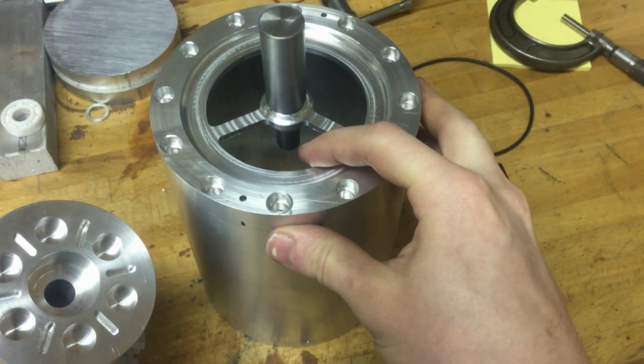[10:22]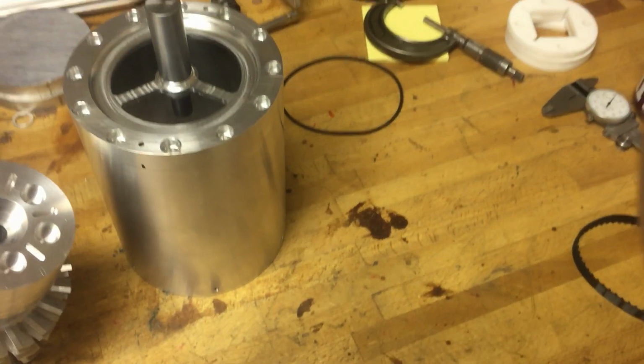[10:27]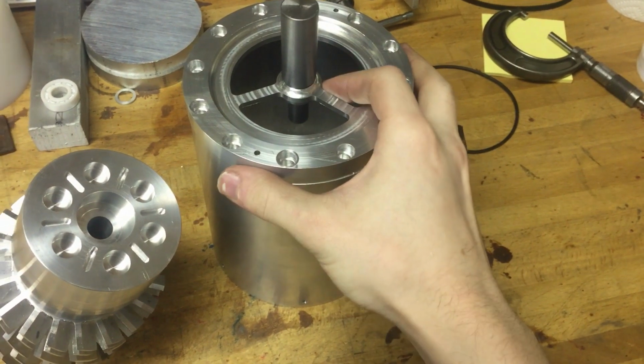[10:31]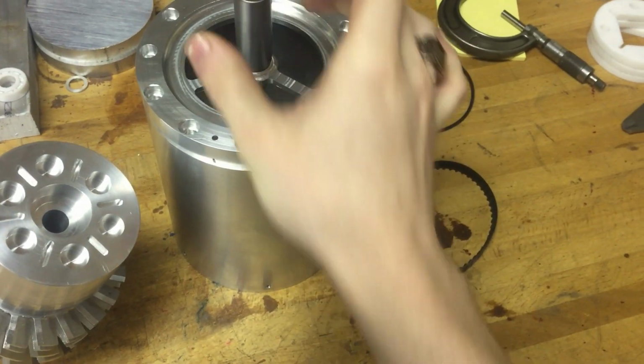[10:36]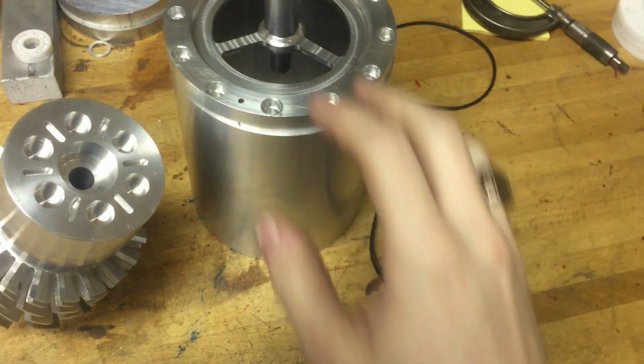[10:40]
That's the current plan. It would also be belt driven, a timing belt. So yeah, imagine a timing belt sitting around that going at 60,000 RPM. That's going to be incredibly loud. It's pretty much foolproof. The timing belt might beat itself to death, but if that didn't happen, it's a pretty easy way of going about it. It's just a matter of getting a strong enough timing belt, I guess, and having a small enough pulley on here so the surface speed of the belt is not too high, which I believe I got good enough.
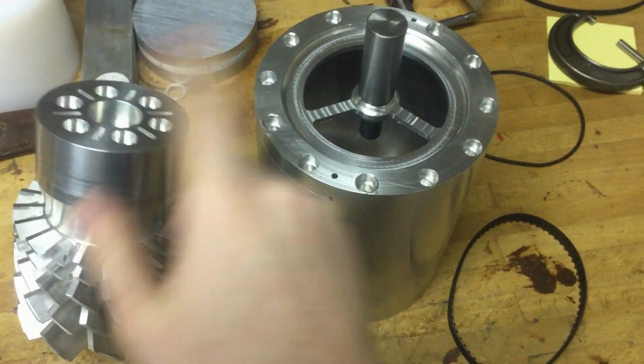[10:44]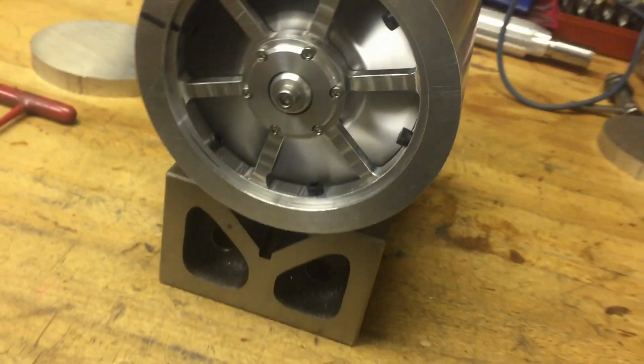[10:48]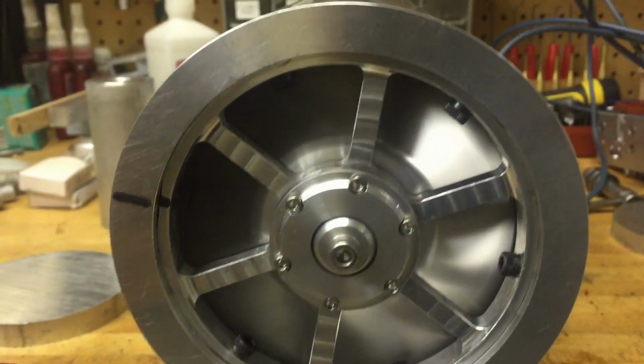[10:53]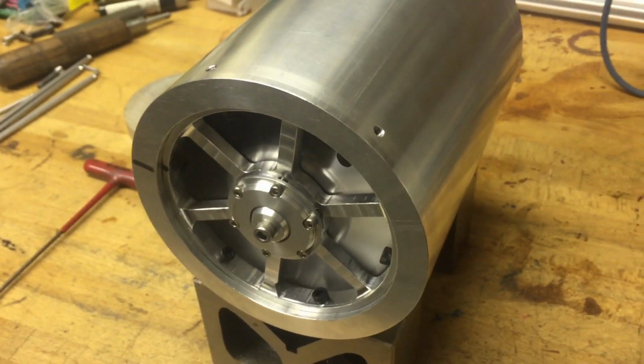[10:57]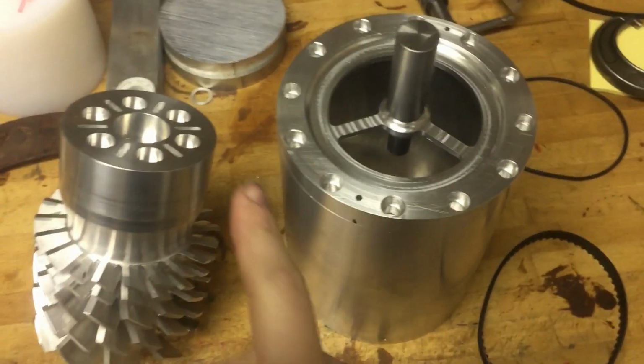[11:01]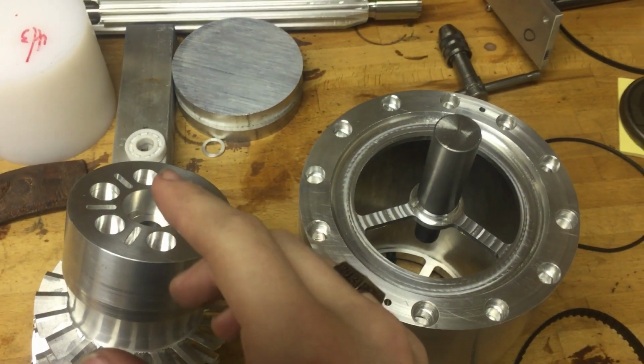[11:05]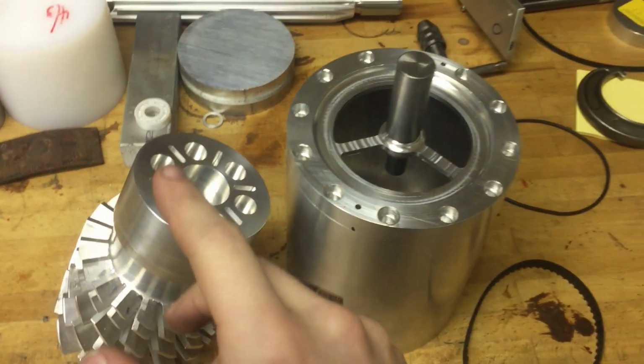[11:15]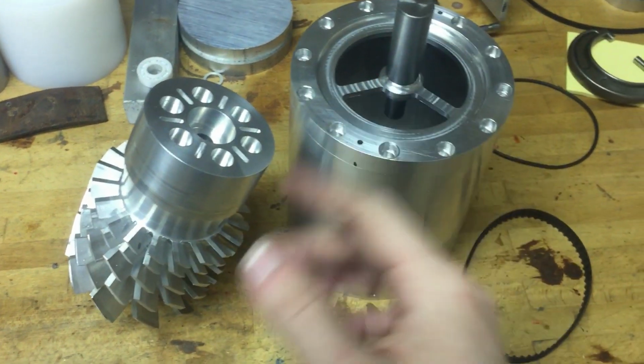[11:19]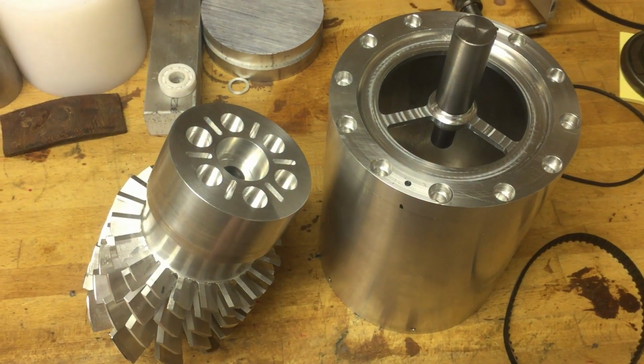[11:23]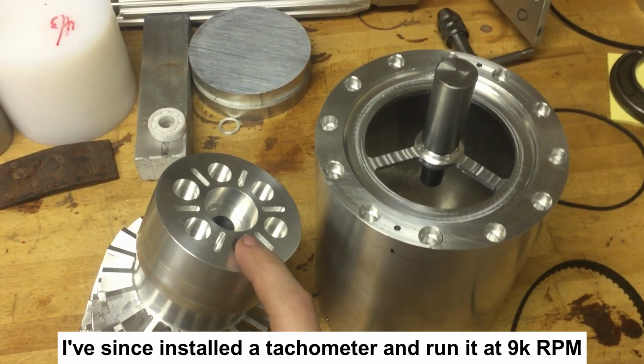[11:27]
It's still kind of noisy. I sped it up on air. I had the whole thing together and ran it on air for a little bit. Works well. The bearings are a little noisy, but full ceramic bearings, I think, are always kind of noisy. That's just the fact that they're so stiff and everything, it just transmits all the noise and gets loud. So I'm not sure if that means the bearings are damaged already, or just low quality, or if it's just the nature of the bearing. We'll see. I didn't have a tachometer, and I have no idea how fast it was going. So I think I'm going to try to get a tachometer or something set up.
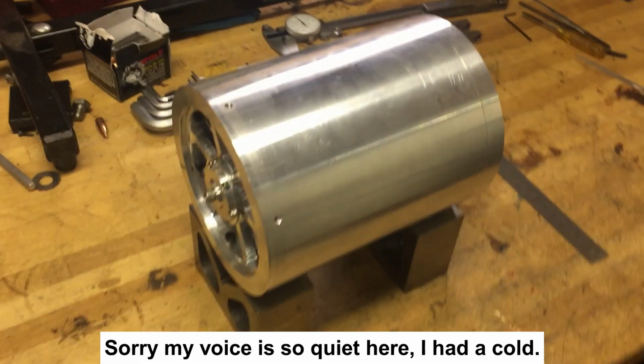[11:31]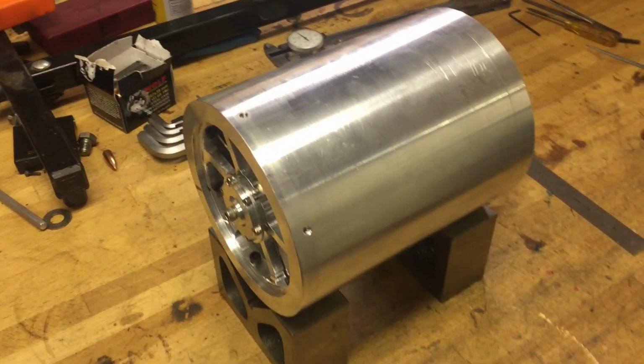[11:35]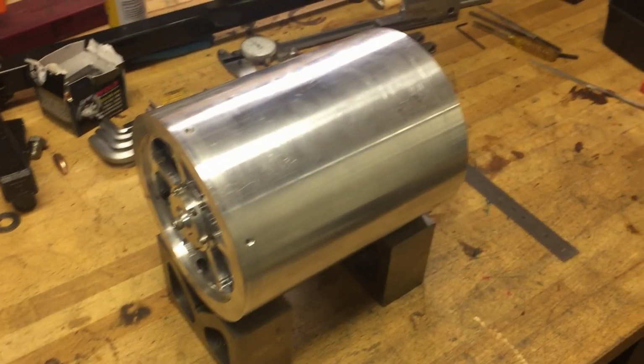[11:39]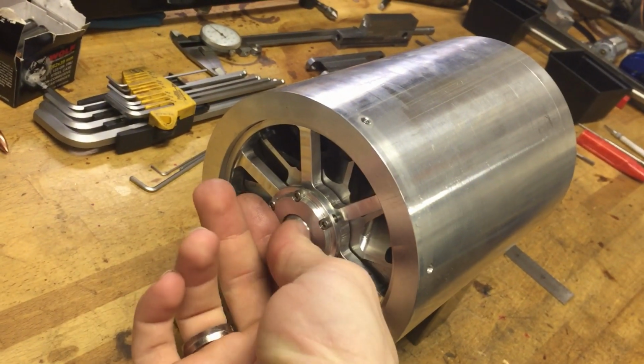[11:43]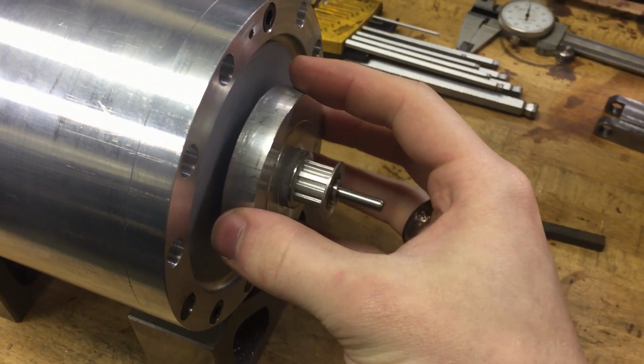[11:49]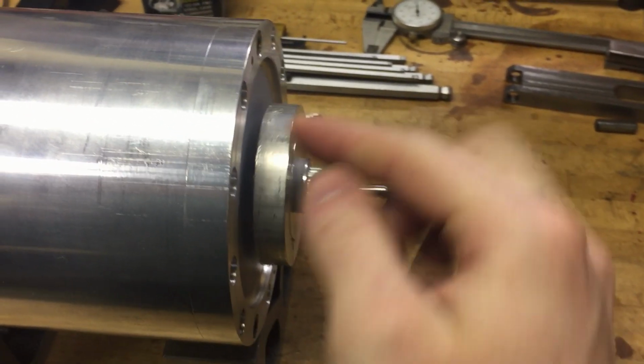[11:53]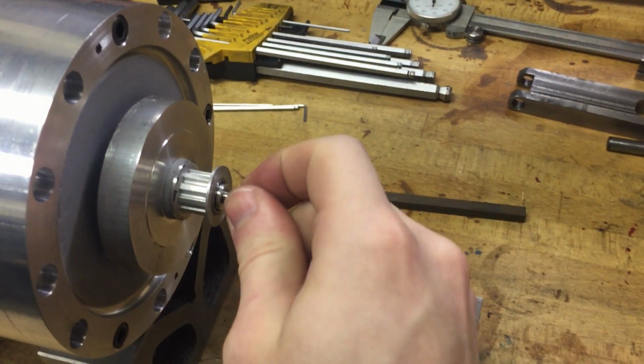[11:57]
Alright, here's a quick addendum to that video. I recorded that about a month ago, and never got around to posting it until now, so it's a little out of date, so I can update you on a few of the other things I did. I have the rotor inside of here. There you go. And I have the magnetic coupling. You might be able to see there's no linkage between this and the rotor on the inside, except for the magnets. This shaft is not spinning.
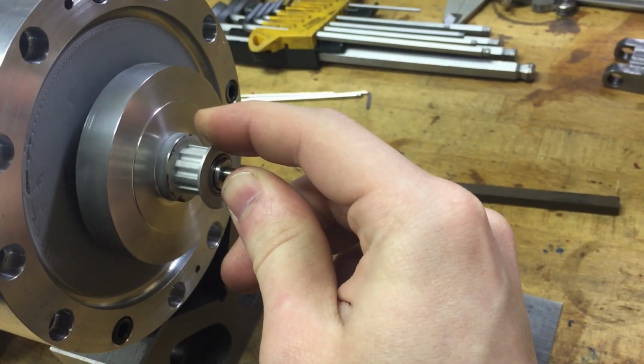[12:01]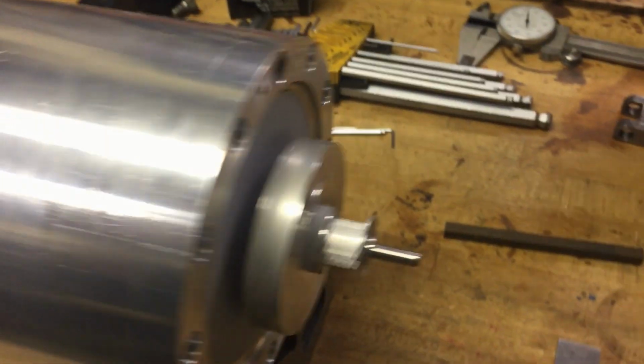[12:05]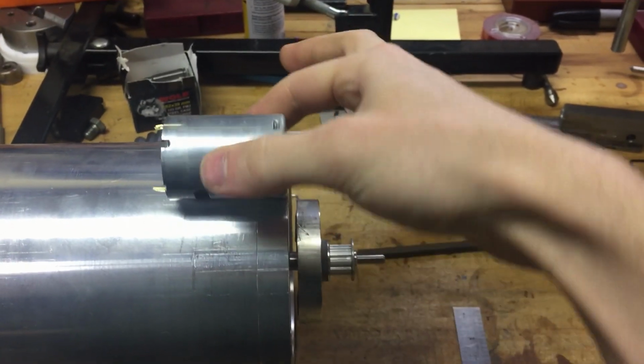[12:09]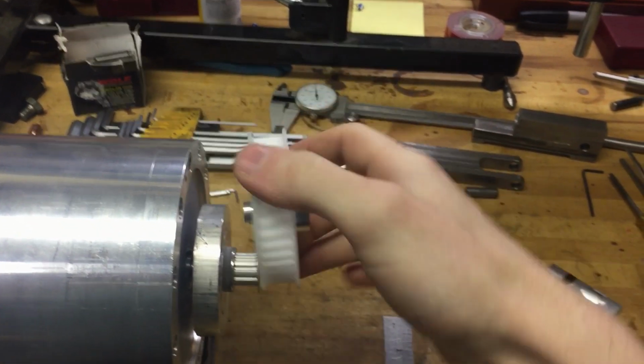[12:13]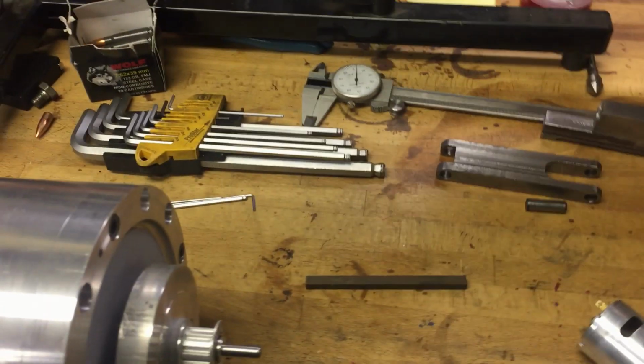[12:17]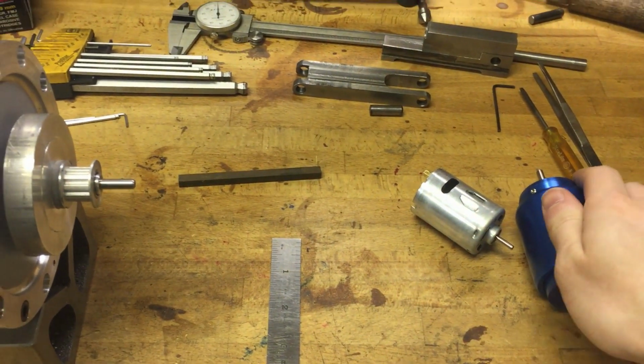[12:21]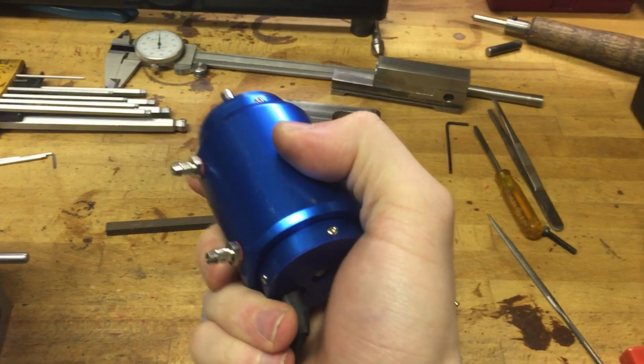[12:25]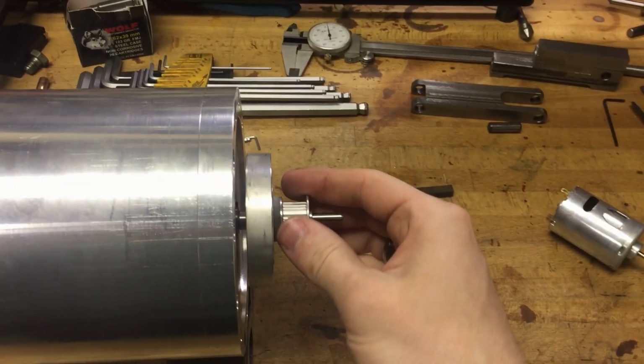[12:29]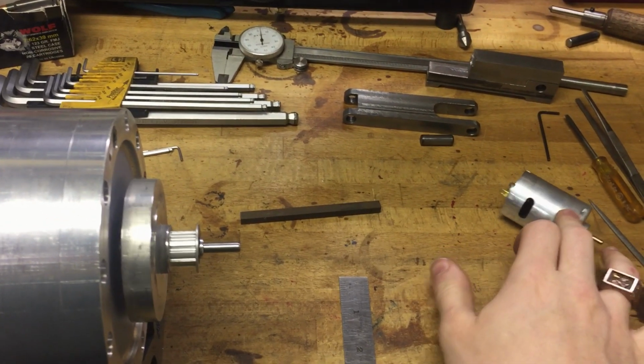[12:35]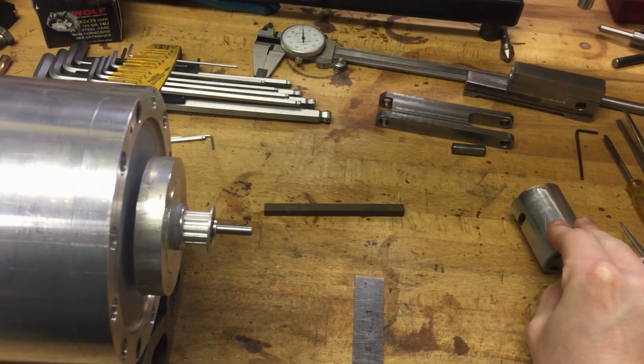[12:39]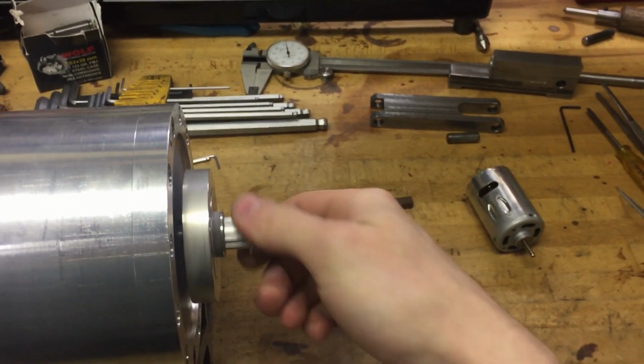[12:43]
This is a fixed shaft. This is on bearings, so if I spin this, it spins the rotor. I had this little motor mounted up here with a pulley and a timing belt to drive it. This was not powerful enough, so now I have a much larger motor. This is a brushed motor, this is brushless, and it's also water-cooled, so I think I'll be able to get this up to full speed that way. I was having issues. I couldn't deliver enough current to this motor, and it was getting extremely hot. Mostly just because it takes so long to spin this thing up, because of the inertia